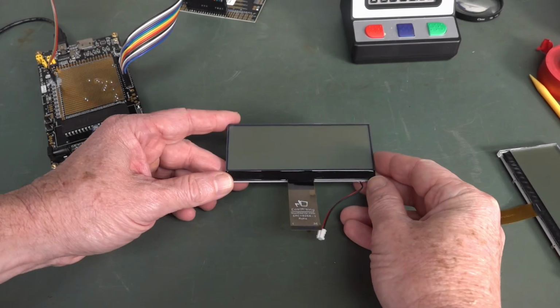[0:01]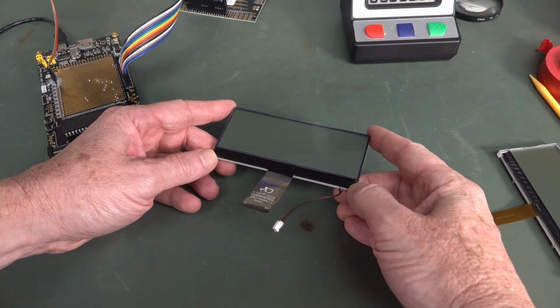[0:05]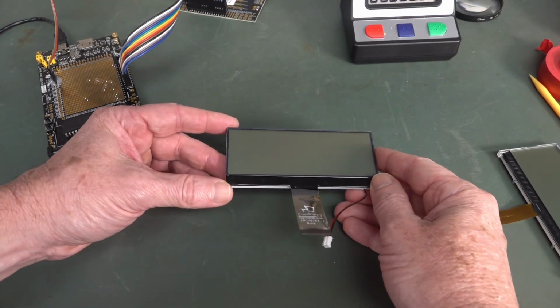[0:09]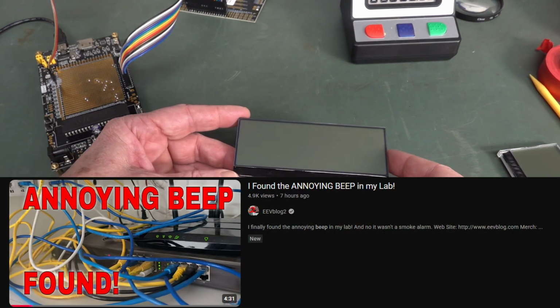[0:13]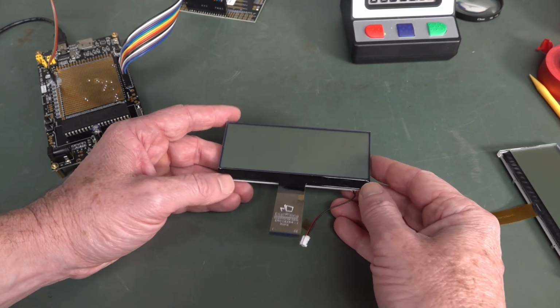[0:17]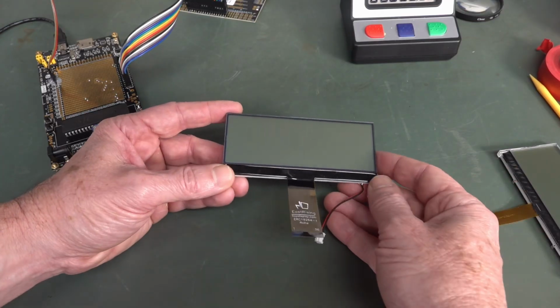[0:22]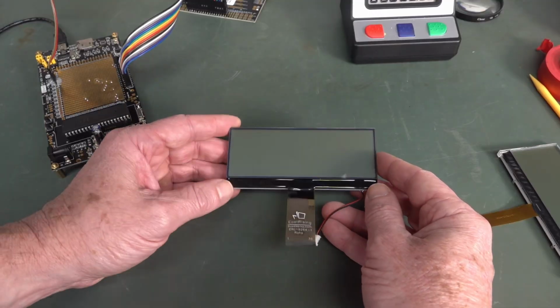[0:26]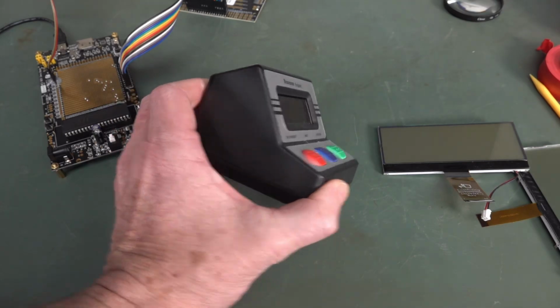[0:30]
This is part one in hopefully a project series where I develop a new product I'm going to call, there's that bloody beep again, I still can't find it. I'm going to call, it annoys everyone. Anyway, this is a project I'm going to call the µTimer, as in the micro symbol, the µTimer, and I'm going to develop a lab benchtop timer, similar to this Brannon one here.
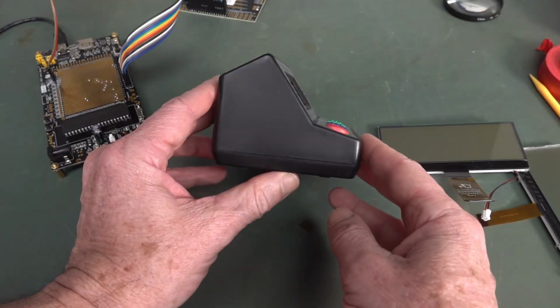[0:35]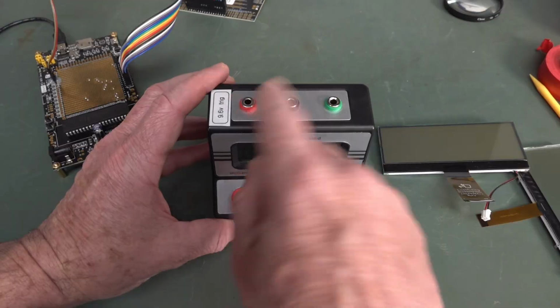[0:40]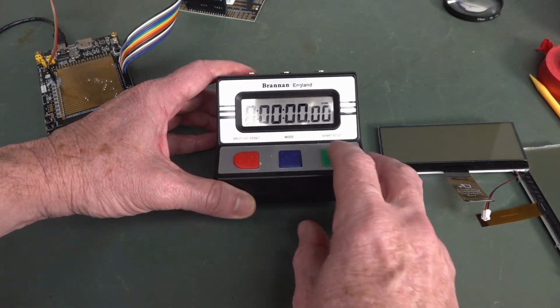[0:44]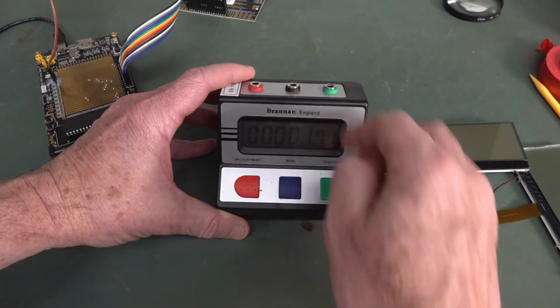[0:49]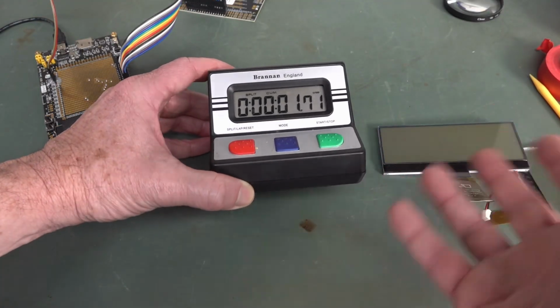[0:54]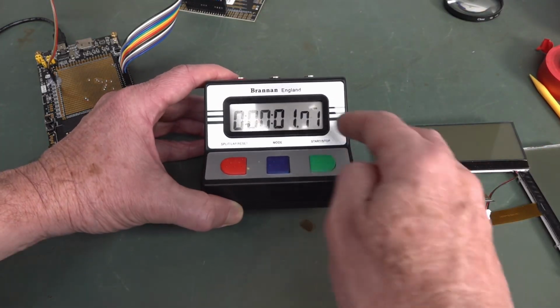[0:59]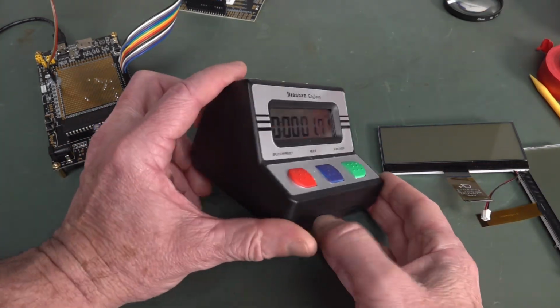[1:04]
There's quite a few on the market that have a similar sort of desktop form factor, and I've always wanted one of these. This one's okay, you've seen me use it. It's got some external inputs here, but they're not very versatile. But anyway, it's just a basic timer. It's just got start, stop, and you can override with external inputs here, useful for timing projects and timing processes, where you might want to automatically start and stop, trigger it, so you don't have to be there to actually watch it. But this is very limited functionality.
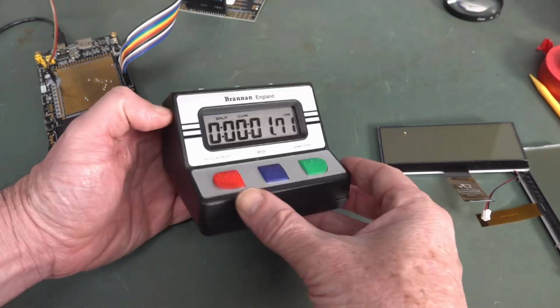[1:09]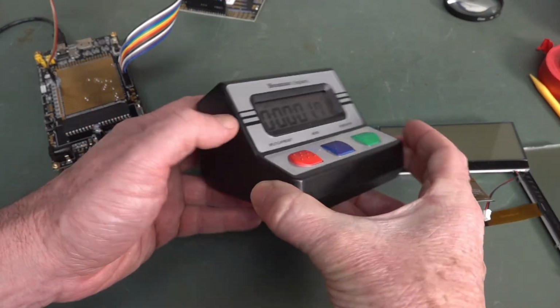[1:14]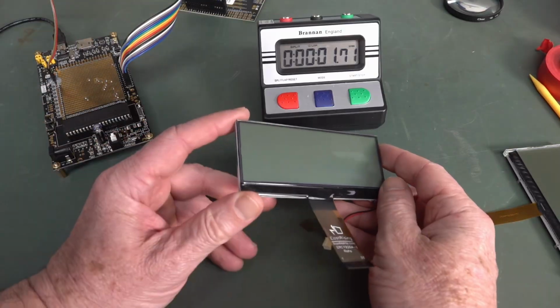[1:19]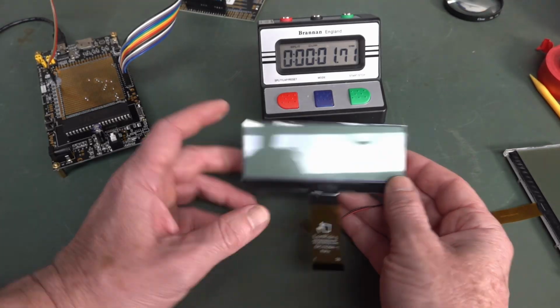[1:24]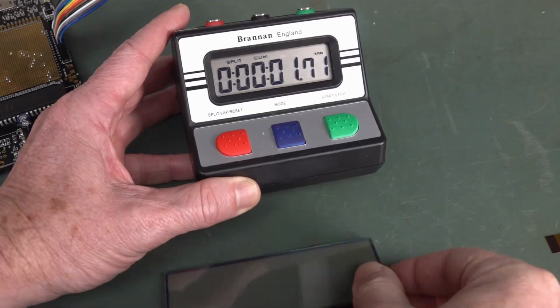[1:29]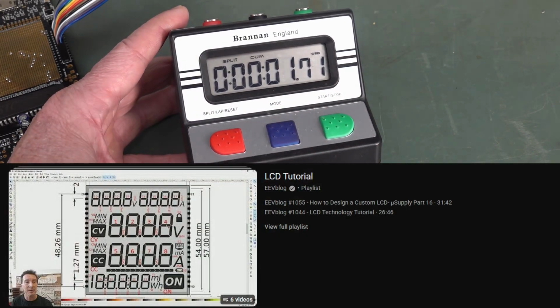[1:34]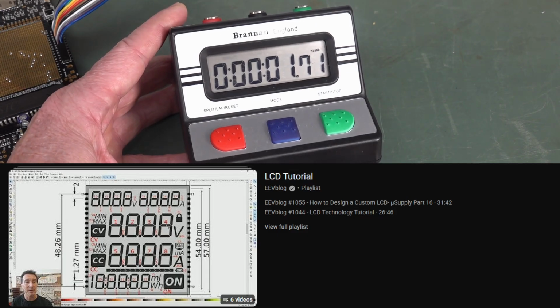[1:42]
But these sort of benchtop form factors are very common in the educational space, the science lab space, that kind of thing. So I was going to develop something similar. The design is basically all centered around the choice of the LCD, because the form factor can come later. It really needs a good LCD. Originally I thought I'd get a custom made 7-segment display, and I'll link a video here if you haven't seen it, where I develop a custom LCD and show you how relatively easy and inexpensive that is, depending on where you go.
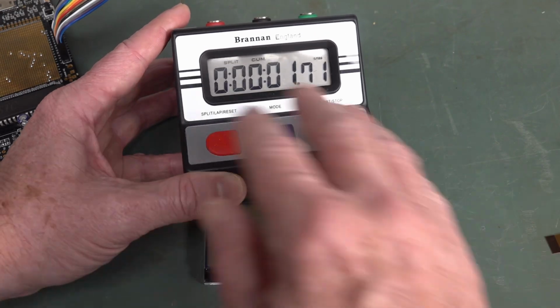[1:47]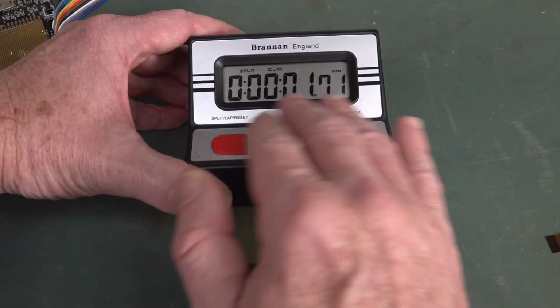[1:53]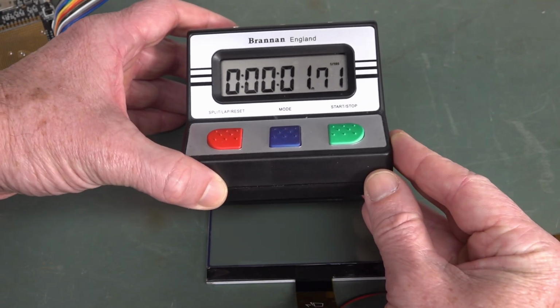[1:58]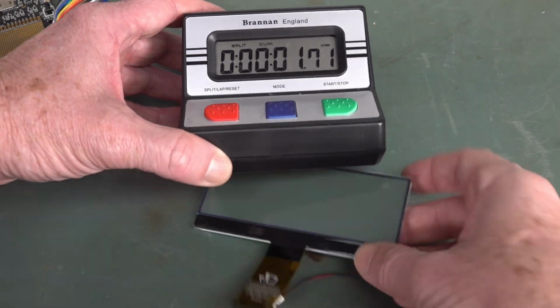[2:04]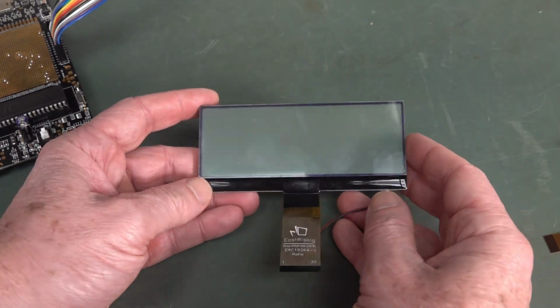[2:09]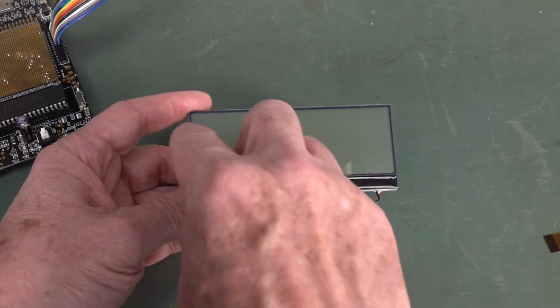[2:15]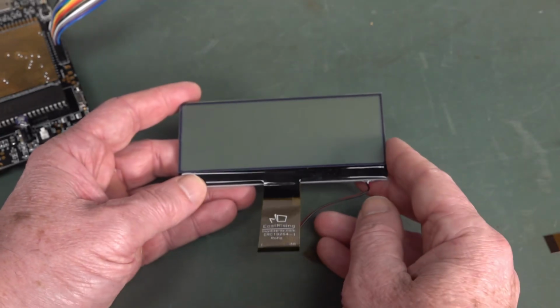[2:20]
So a custom LCD, and I wanted bigger digits so that you can see it from across the lab. Custom 7-segment displays like this can have really good contrast. That's the best in terms of contrast, but it just limits the functionality. And I thought, well, I don't want this to be a jack of all trades, master of none. So not only would I have a bigger display, but I'd make it full dot matrix as well, just for some versatility. You can change the size of the font, you can have multiple timers going and things like that. You can't really get that flexibility with a custom 7-segment LCD.
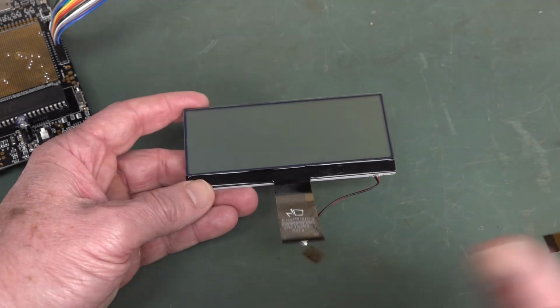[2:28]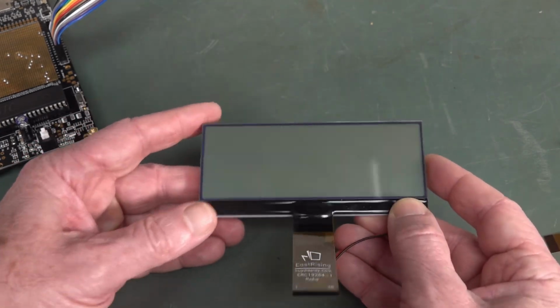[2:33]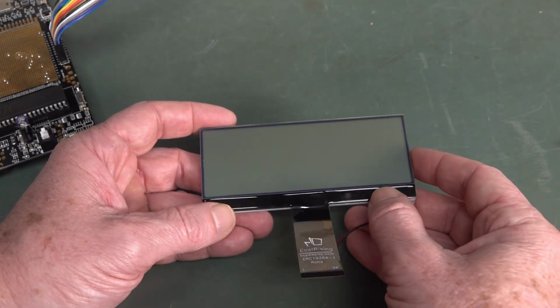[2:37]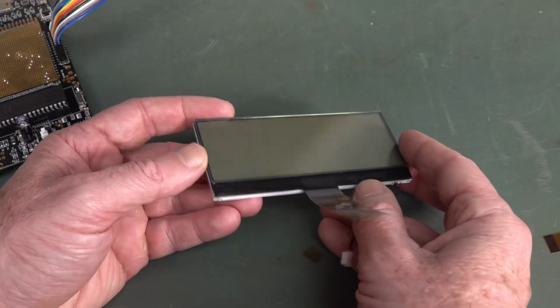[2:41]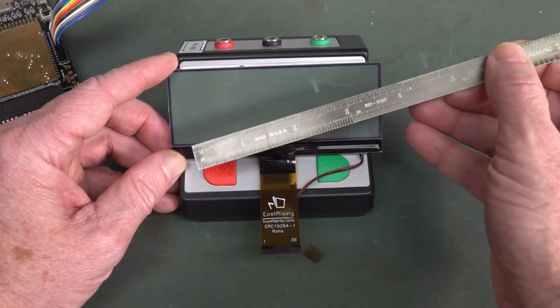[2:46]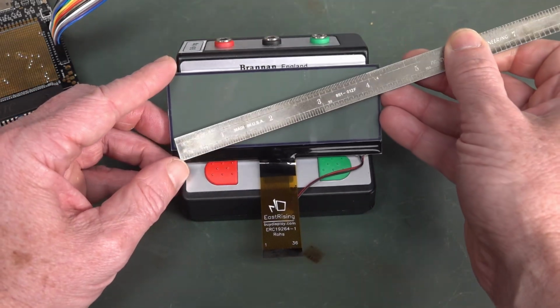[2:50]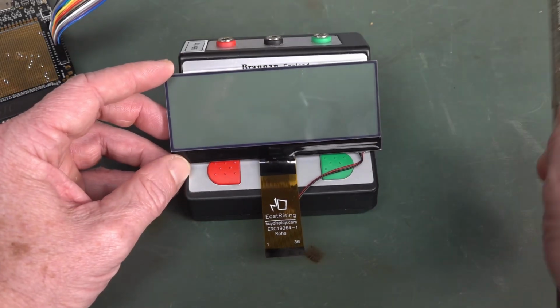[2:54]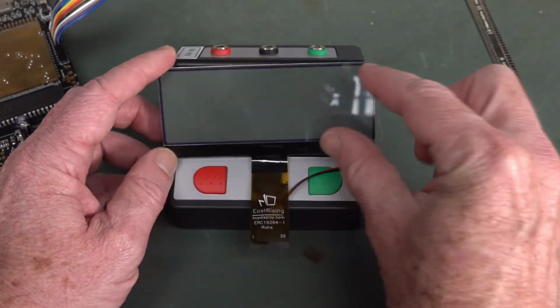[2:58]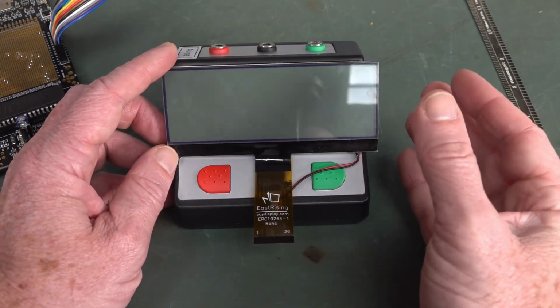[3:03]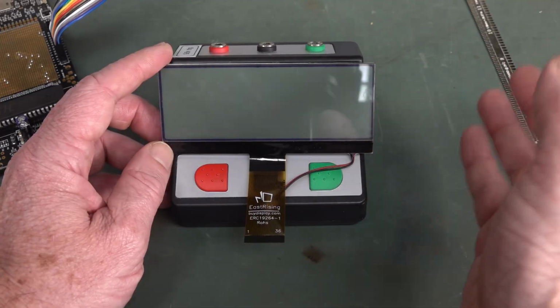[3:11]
You're just fixed. So I thought I'd get a low power display, because it's got to be battery powered from a couple of AA batteries. I haven't decided on the power source yet, but we need sub 1 milliamp consumption. Looking around at LCDs, I figured a 4-inch diagonal one like this, I think 4.1 inches visible area, would give nice big digits you could see across the lab. Of course it's got to have good contrast as well. It's got to be low power, so it's battery powered, so that you could have a clock on this thing during the day when you're not using it as a lab timer.
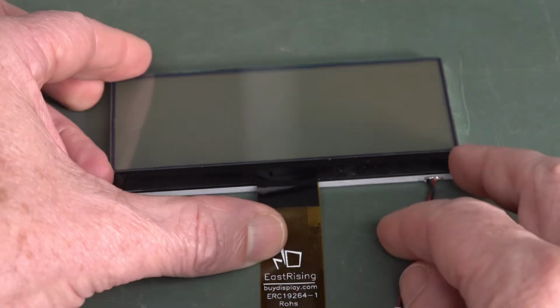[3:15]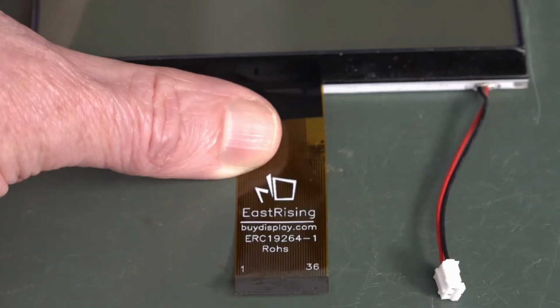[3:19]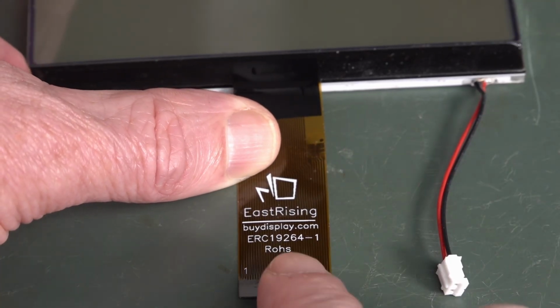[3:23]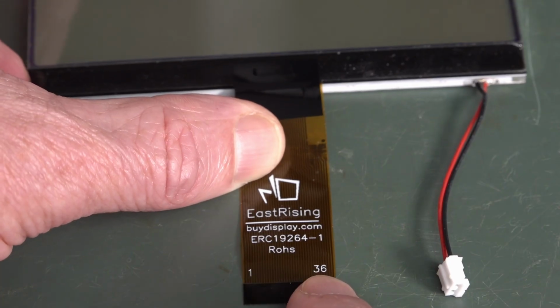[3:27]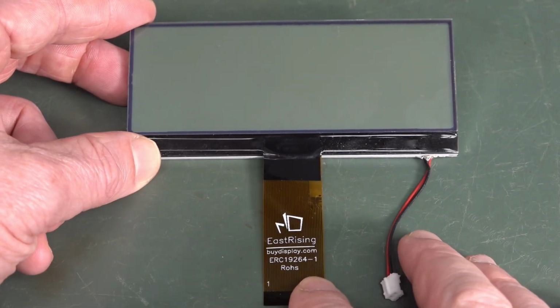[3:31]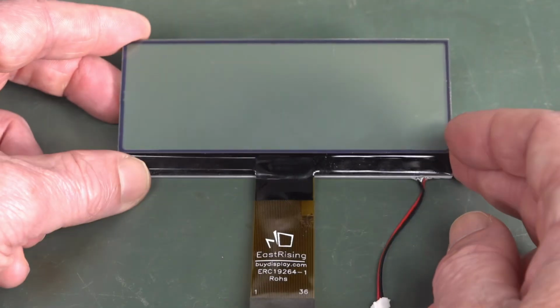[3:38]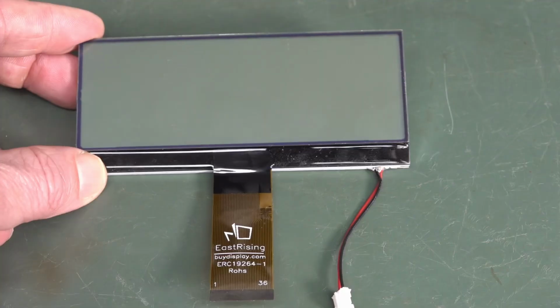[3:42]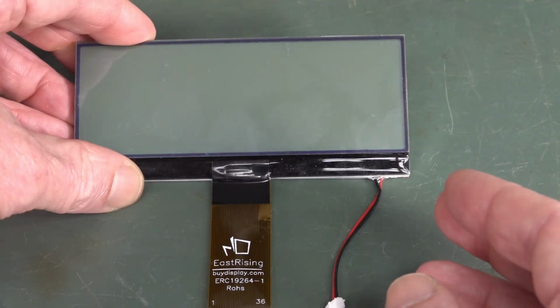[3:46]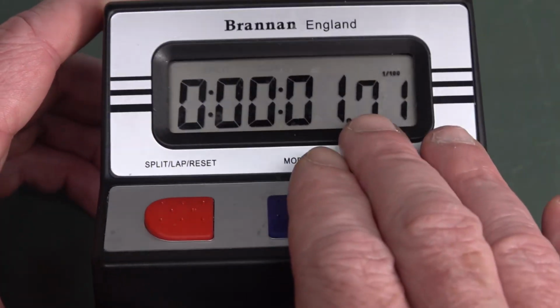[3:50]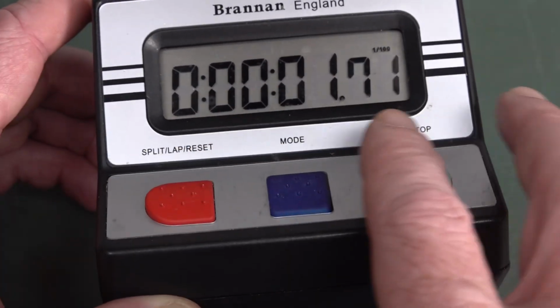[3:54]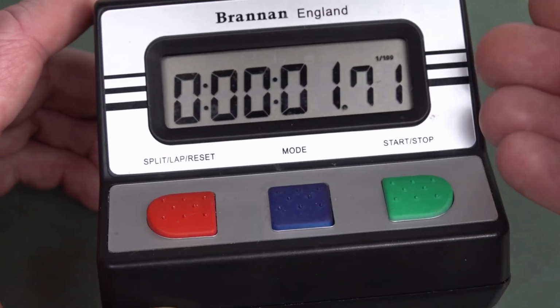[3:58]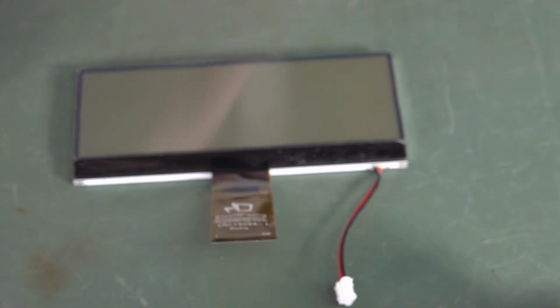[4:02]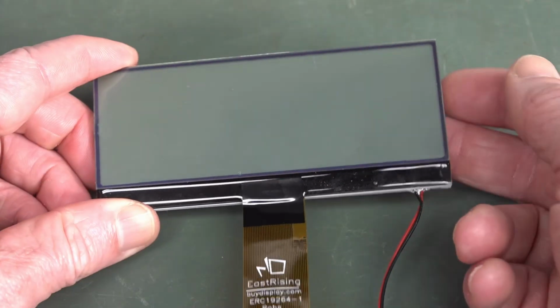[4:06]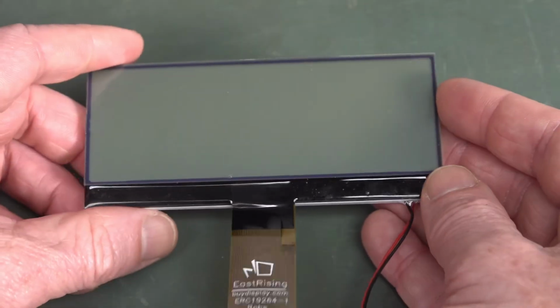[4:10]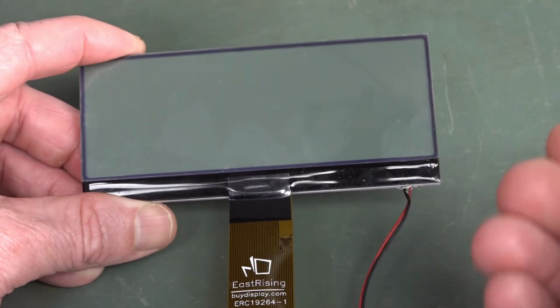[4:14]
So I was looking around at 4-inch LCDs and I found this East Rising one. They've even put their website on there, buydisplay.com. So I got this sample. This is an ERC19264-1, and this is about $9 one off, and the price drops in volume, of course. It does include a backlight, but this is what's called a transflective display, and I think I've done a tutorial video on LCDs and the different types. Transflective combines the best of a reflective display. This is a 100% reflective LCD, you don't need a backlight, it doesn't have the ability to have a backlight, it's 100% reflective backing on it. That's called a reflective LCD, and this one is also reflective, but it's transflective in that it will also allow a backlight through, and this one does come with a nice white backlight on it, where it allows the light to come through.
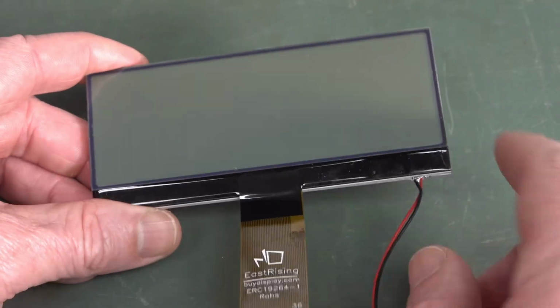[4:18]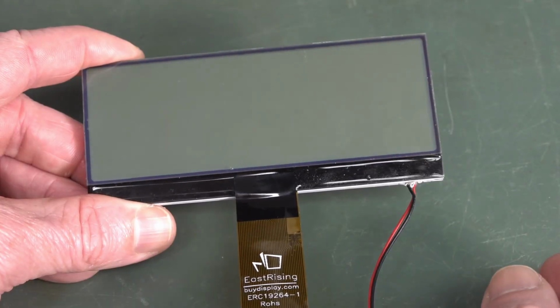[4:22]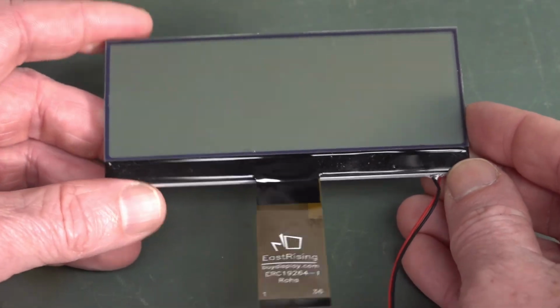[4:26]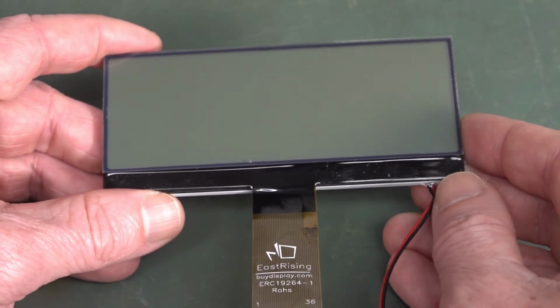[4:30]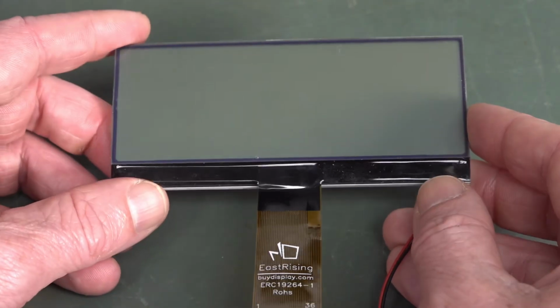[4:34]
But I don't really need the backlight, but I guess I could put a backlight button on it, so if you want to temporarily turn the backlight on, you can, but otherwise it's going to chew too much battery power. So ideally I wanted a fully reflective LCD display, but I couldn't readily find one in 4 inches. So anyway, I got this one and I thought we'd try it out.
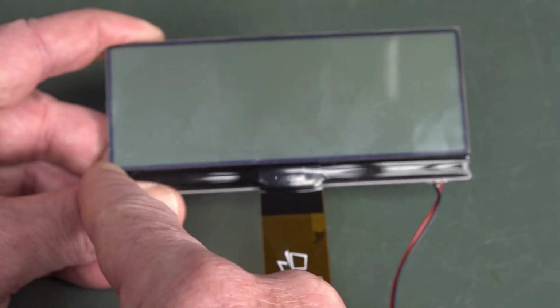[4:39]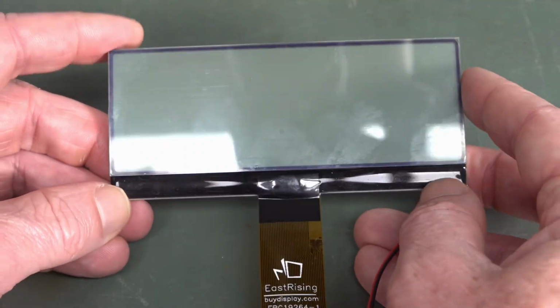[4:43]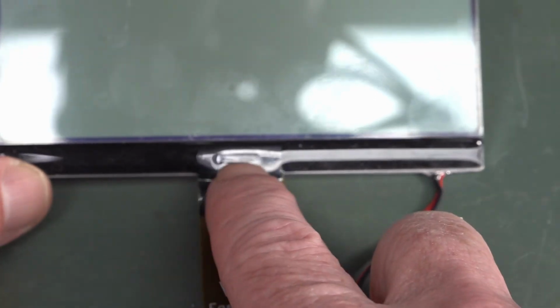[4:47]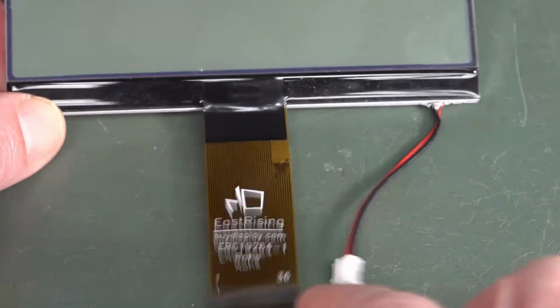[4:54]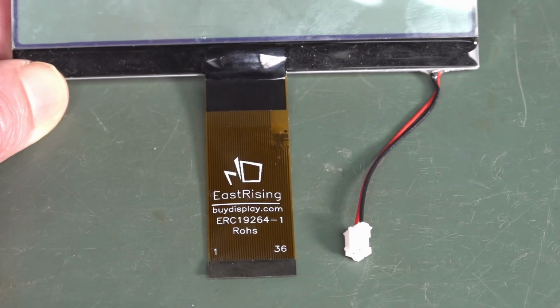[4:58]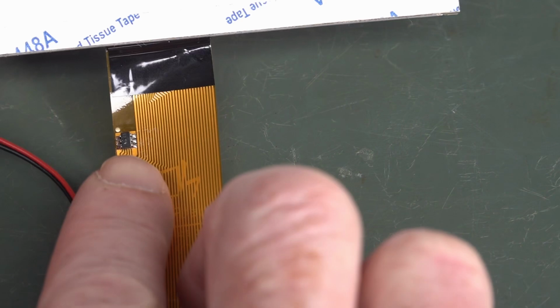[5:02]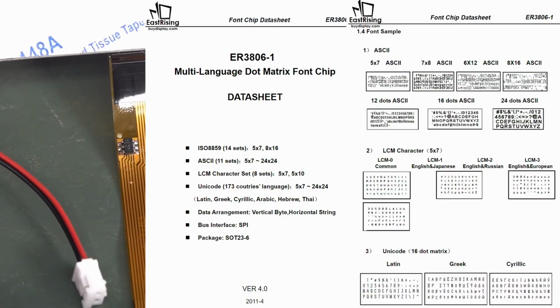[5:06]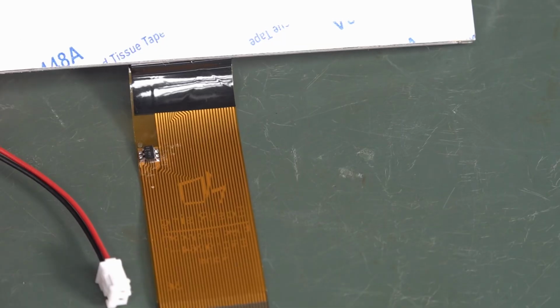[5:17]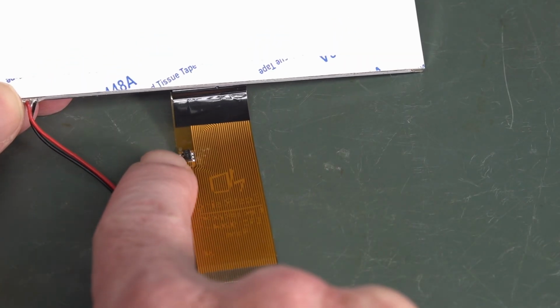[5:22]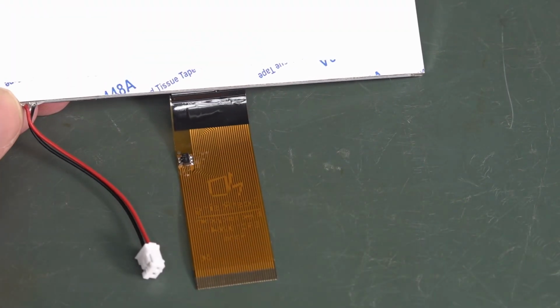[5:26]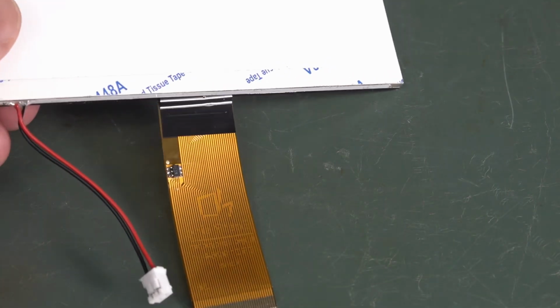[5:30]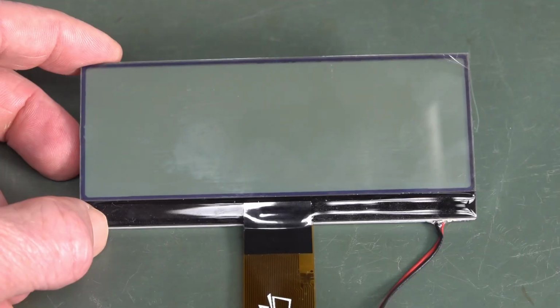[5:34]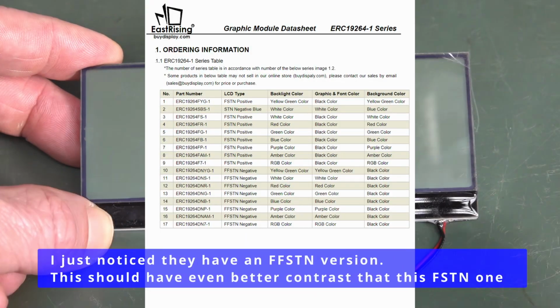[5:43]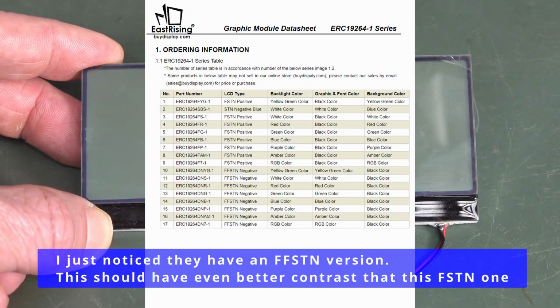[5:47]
And this one actually comes with an optional font chip, which stores all the fonts so that you don't have to compile the fonts you're going to use for all your text inside your microcontroller. That just means you can use a smaller, simpler, cheaper microcontroller, and simply read the fonts from here and transfer them directly into the chip as you need them. So it just frees up memory space in the microcontroller that would otherwise be taken up with fonts. So that's handy. If you do know of a 4-inch fully reflective LCD instead of the transflective one like this, this is an FSTN one, and I'll link all the data sheets for all these things down below.
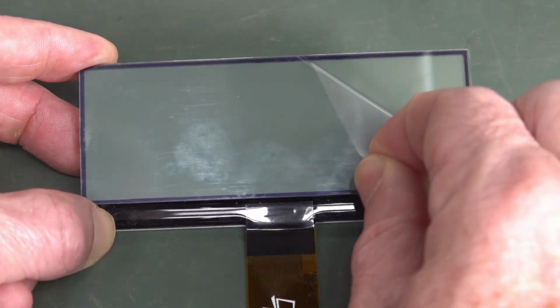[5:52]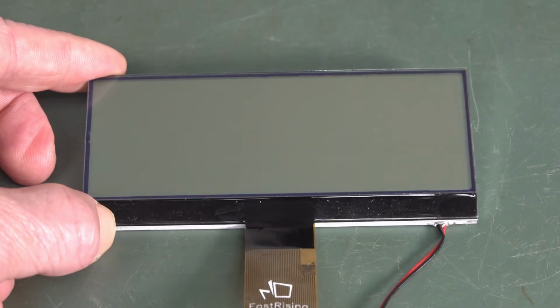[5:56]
So anyway, for you film aficionados, we have the film on it. Oh, look at that. There we go. Oh, thing of beauty, joy forever.
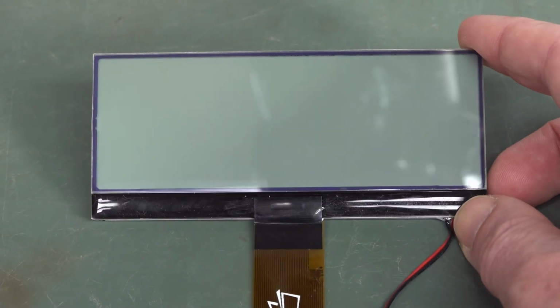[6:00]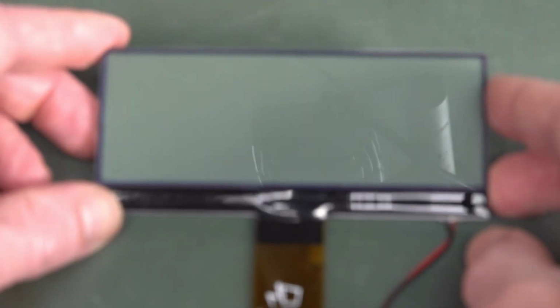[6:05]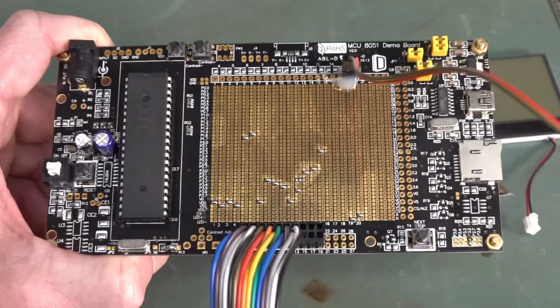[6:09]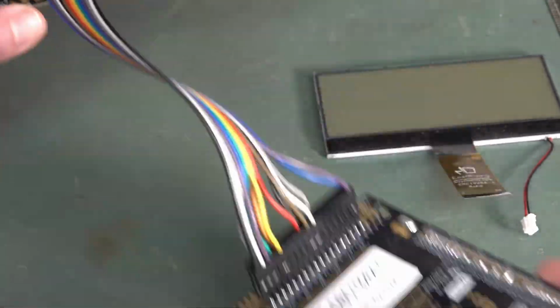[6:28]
So basically, this video is just testing out what I think about the contrast of this LCD and how it looks. I wanted to get this up and running very quickly, so I ordered the demo board as well. This is actually quite cheap. It's an 8051 demo board specifically for this LCD. Well, they will match it to the LCD you buy. They've got tons of different LCDs and they will match it. So this is the driver board for it, and it's got example programs built in, so we should be able to get this thing talking straight away.
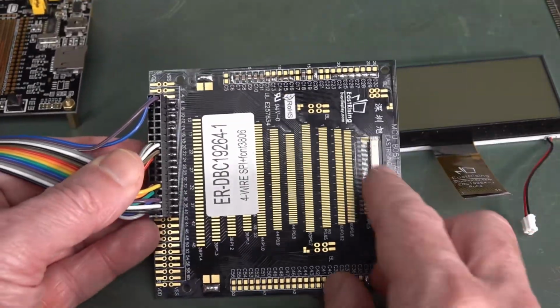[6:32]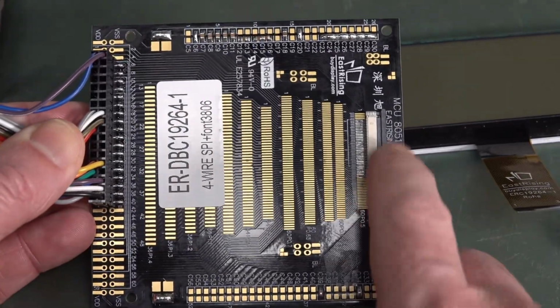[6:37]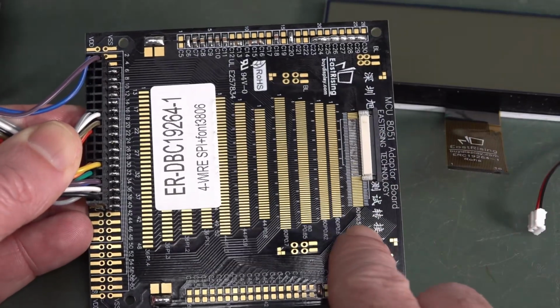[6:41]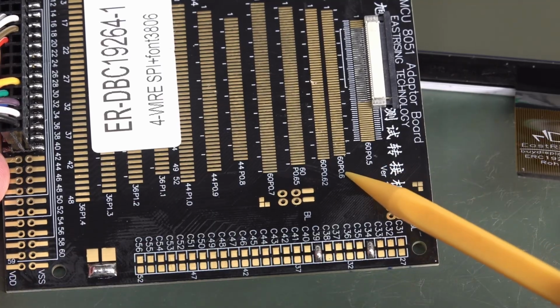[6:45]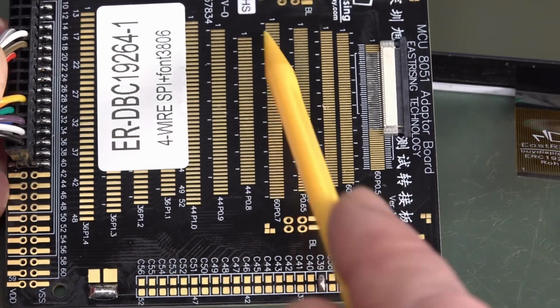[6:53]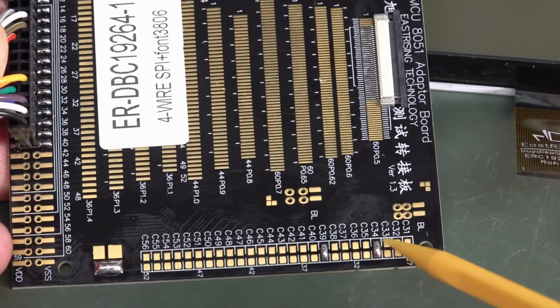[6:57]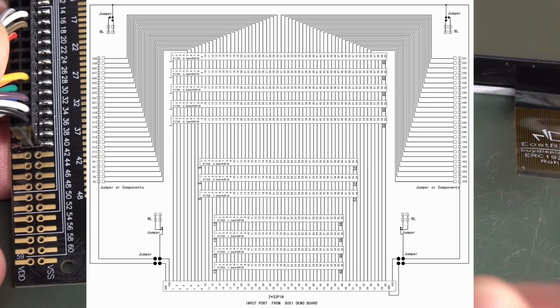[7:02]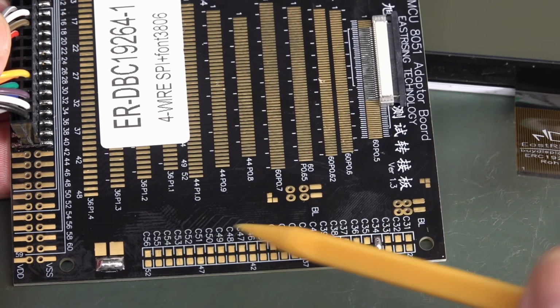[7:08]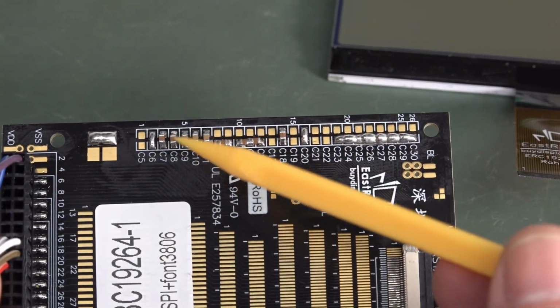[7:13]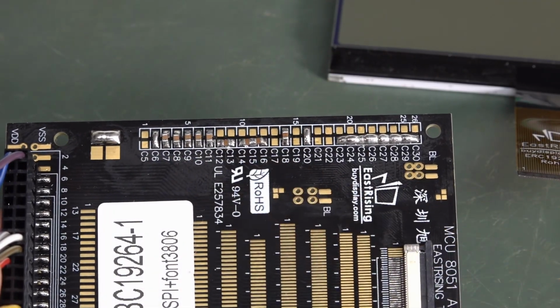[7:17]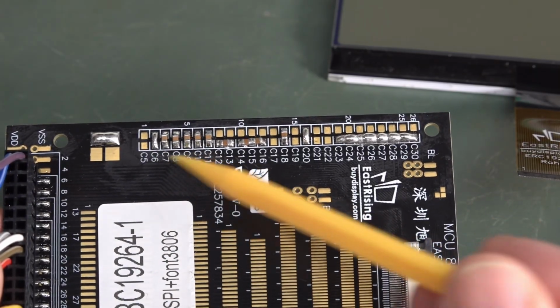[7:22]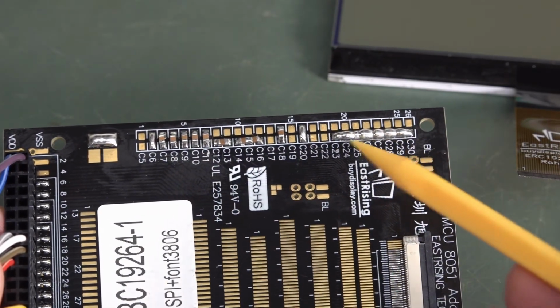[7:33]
I think this is the positive side. They should label it a bit better, but you can tie each individual pin down to ground up here. They've installed some caps up here, so you can put capacitors down to ground. They would be for the internal contrast boost converters, for example, the bias capacitors, the bias pins on the LCD. So you have to put those in various configurations. They've got a capacitor across 2 pins there, or they've got others going down to ground like this, and they've strapped these pins here.
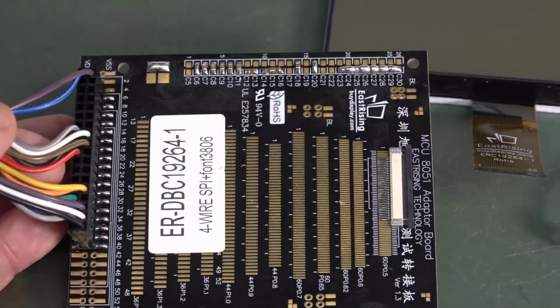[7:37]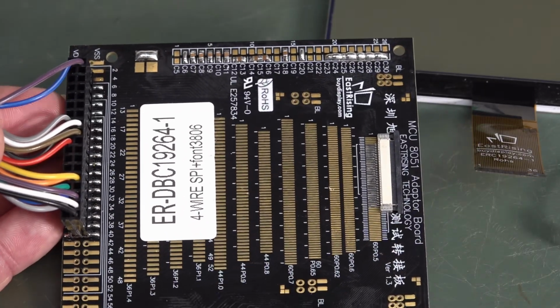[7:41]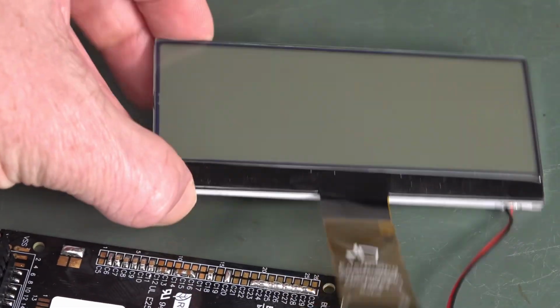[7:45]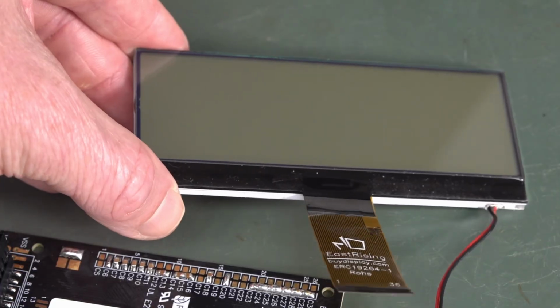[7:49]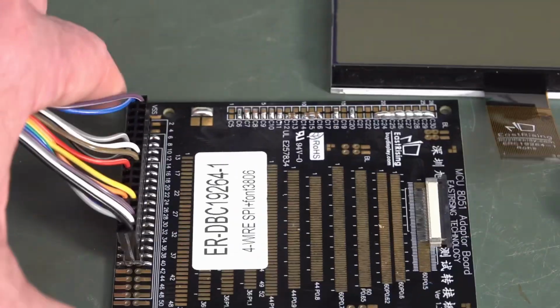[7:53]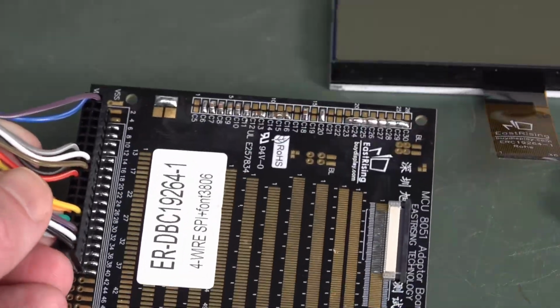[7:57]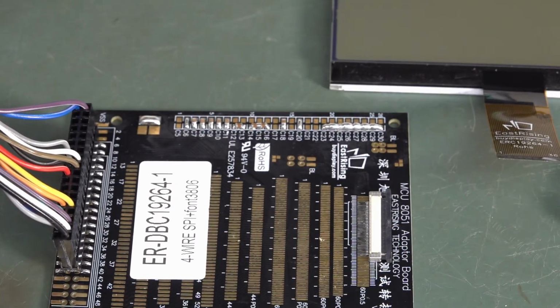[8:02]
I haven't gone through the exact pinout of this thing. They're only using some of the pins here. I think I specified an SPI interface because this LCD is capable of SPI serial interface. I think it might do I2C as well as 4-bit and 8-bit parallel interfaces. So it's very flexible, but I think it might be working serial, but I haven't 100% confirmed that. Anyway, let's plug it in and see if we can get this thing working straight out of the box.
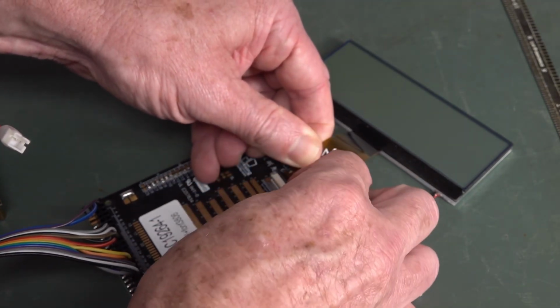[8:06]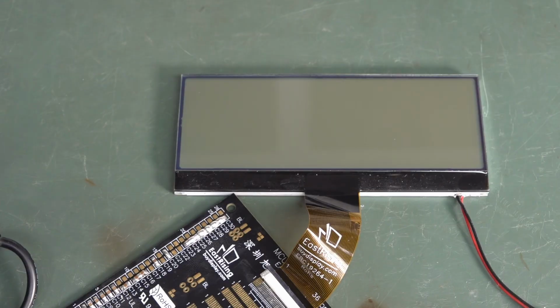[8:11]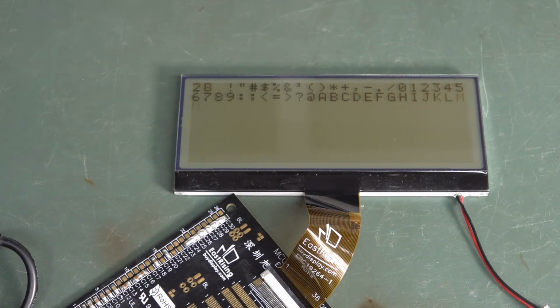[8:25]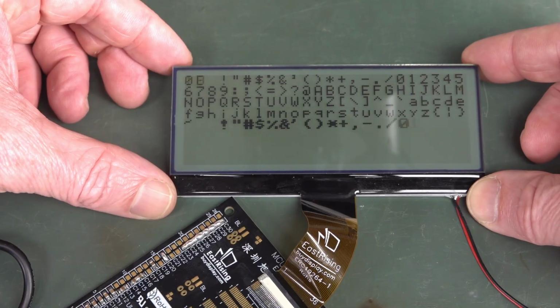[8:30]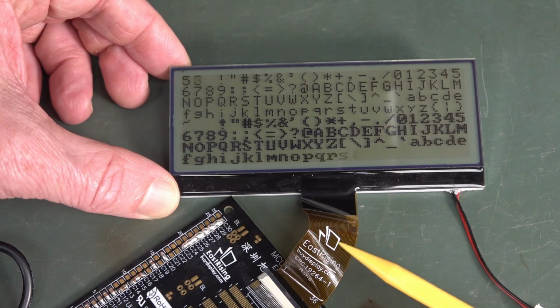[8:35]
All right, so we put that in there. We get that shut like that, and let's power this thing up. All right, I've plugged in the USB here, haven't plugged in the backlight yet. Let's just see, because I really care about what it can do without the backlight. So let's power on. Hey, there we go. EastRising buydisplay.com, and boom, straight off the bat, it is giving us all our outputs. Look, and it's changing the fonts as well. I don't know if it's reading from that actual font chip on there or whether it's just got them programmed in.
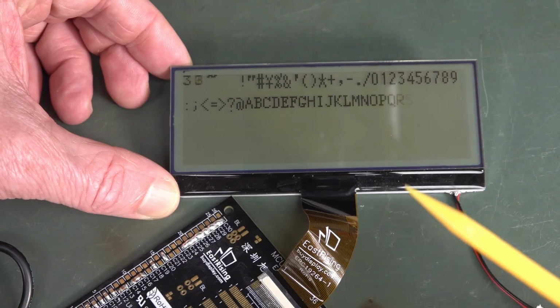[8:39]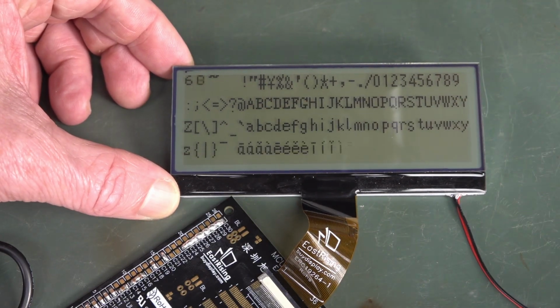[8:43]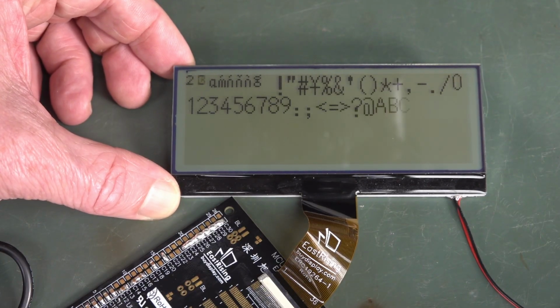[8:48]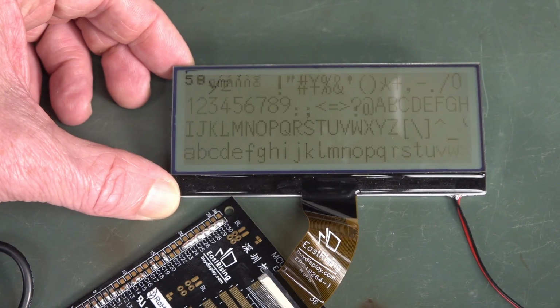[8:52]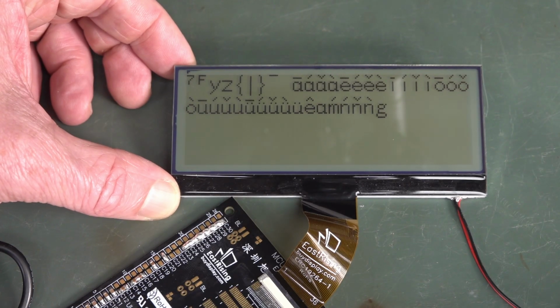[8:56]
But of course, when we're having big digits, I might have to do custom fonts. So not sure if I'd use the font chip anyway, but might as well include it in the design, I guess. Look, that's quite a large font, but that's still not as big as we want. But yeah, there you go.
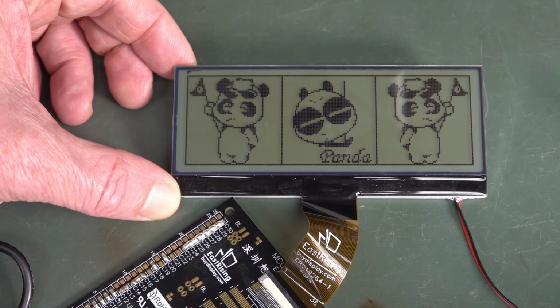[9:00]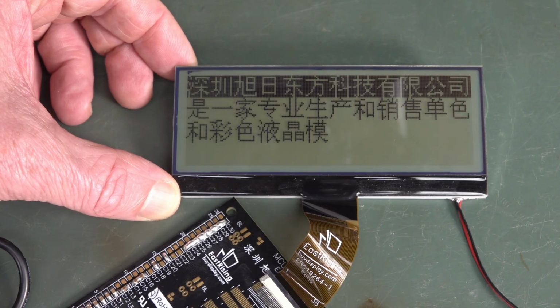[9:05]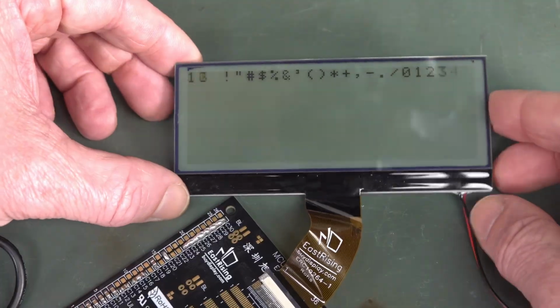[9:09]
So cool bananas. Right out of the box, they've sent me this demo board, and there you go. The Dash series, they've got their Panda. And it's got a stop button on it too, so yes, we can freeze that. So there you go. It works out of the box. It's not a bad viewing angle.
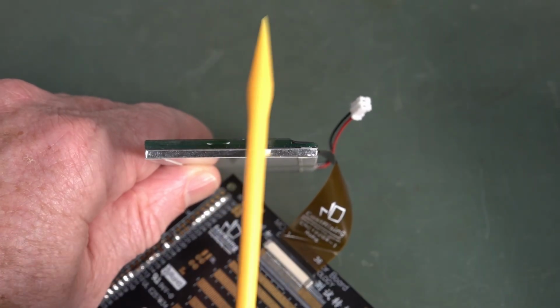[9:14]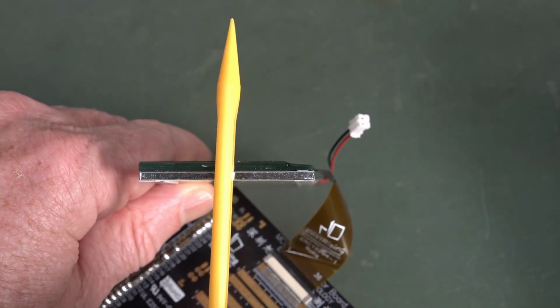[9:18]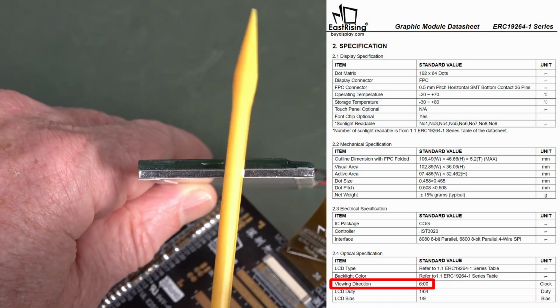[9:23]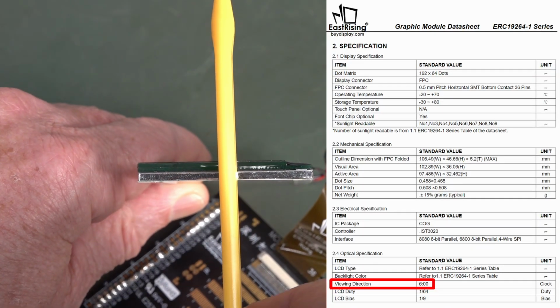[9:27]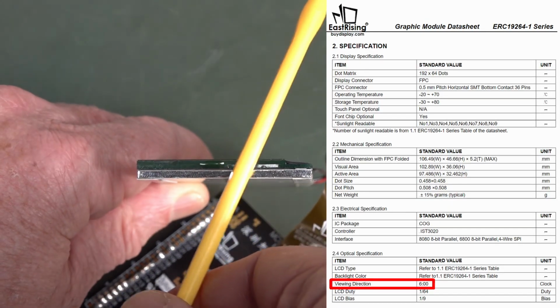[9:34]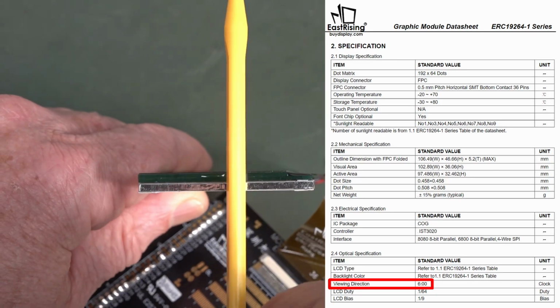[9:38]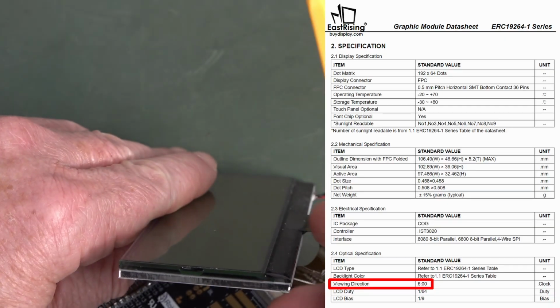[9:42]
So when you order LCDs, either custom or off the shelf like this one, they will have what's called a bias angle or a view position or something like that. The terminology can interchange, but we'll just stick with bias angle. What that means is that you can get them in 2 types, either 6 o'clock or 12 o'clock. It refers to either up or down on a clock, basically. And this one's a 6 o'clock one if you look at the data sheet. What that means is that this is the bottom of the LCD.
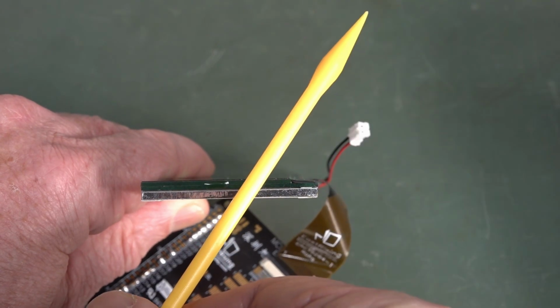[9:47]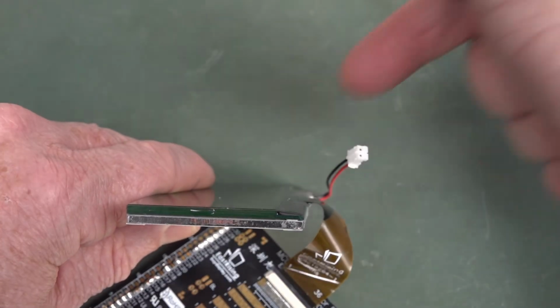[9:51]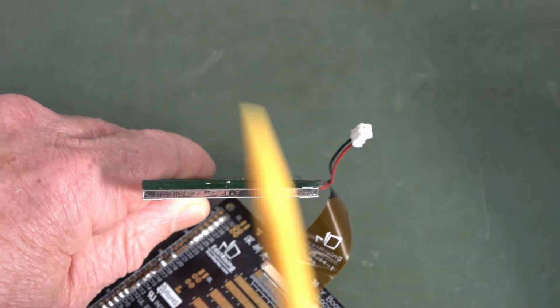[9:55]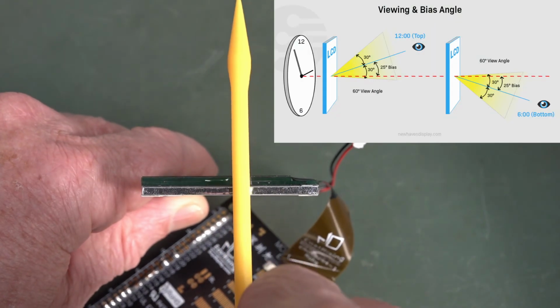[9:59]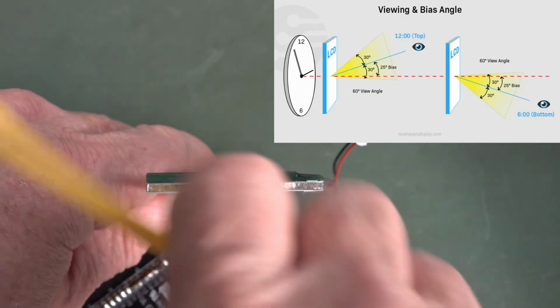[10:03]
So it's designed to be viewed from a lower angle like that. So if your eyes are over here, you're looking up at the screen. That's called a 6 o'clock bias or viewing angle. And if you get a 12 o'clock one, it's actually over here like this, so you're looking down on the LCD.
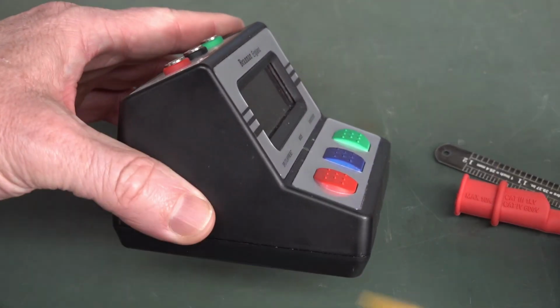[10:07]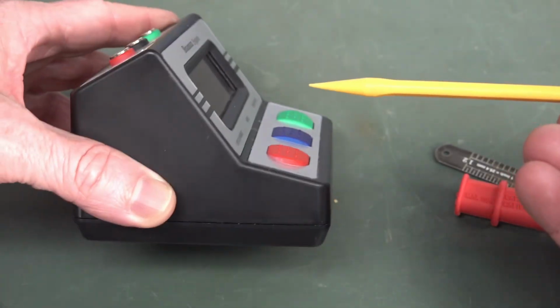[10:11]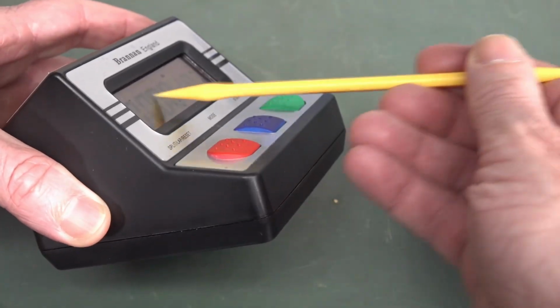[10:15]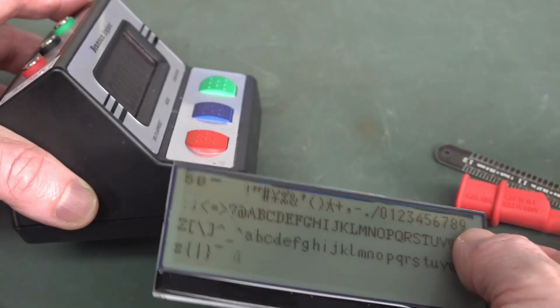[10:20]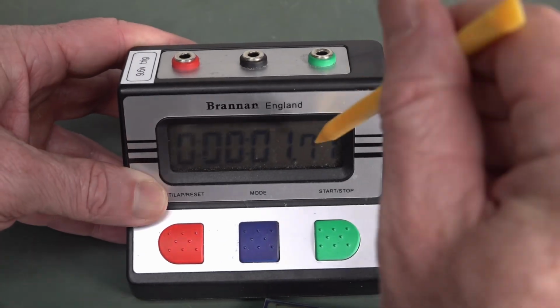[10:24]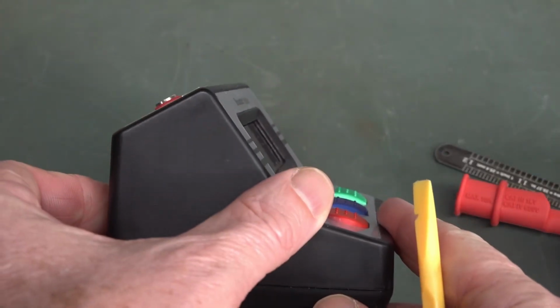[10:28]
So if you've got a product like this, if you're viewing it from a long way across the lab and you've got it sitting on a bench, you'd be looking up at the LCD. So you want this 6 o'clock one that we've got here. But if you had something that was flat like this and you're looking down on it, then you would want the 12 o'clock bias angle.
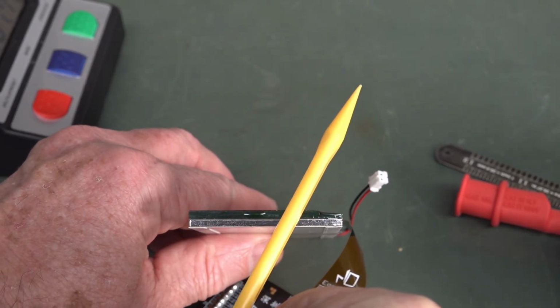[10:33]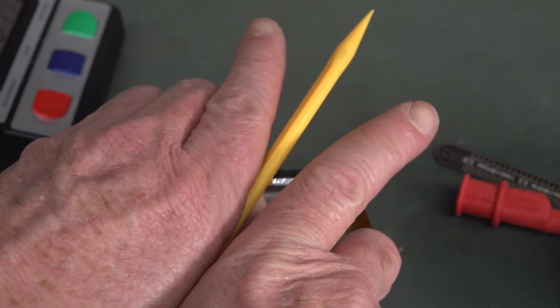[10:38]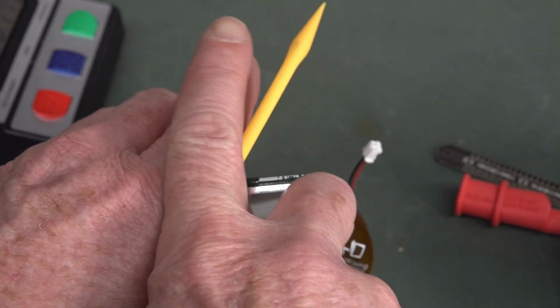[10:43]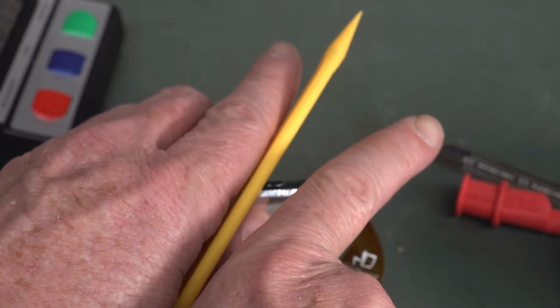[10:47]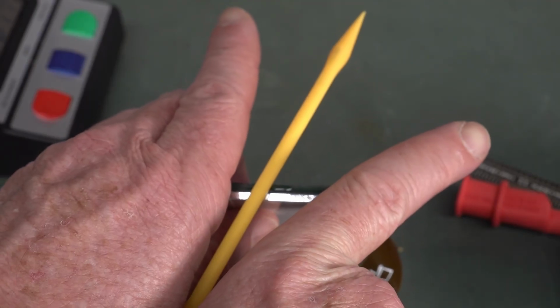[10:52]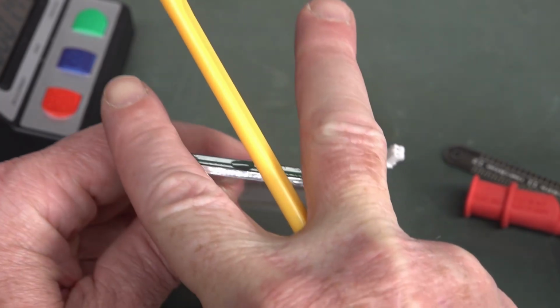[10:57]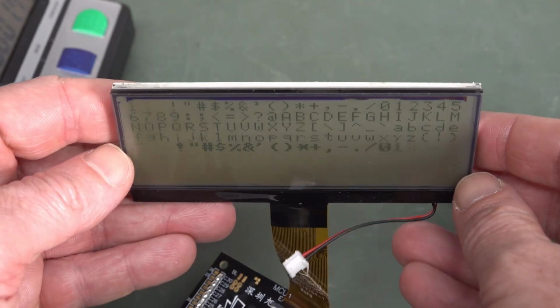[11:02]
And on top of the bias angle, which say it's at 6 o'clock from the bottom, you will then have the viewing angle. Please excuse the crudity of the model, I didn't have time to build a scale one or to paint it. You will have the viewing angle, which is then plus minus a certain number of degrees. Say you've got a 60-degree viewing angle, then it would be plus minus 30 degrees from that bias angle. So if it's 12 o'clock, then you'll have a viewing angle like that from the positive side. But this is the 6 o'clock one, and you can see this actually has quite a large viewing angle.
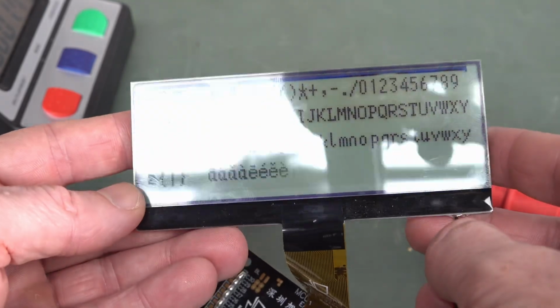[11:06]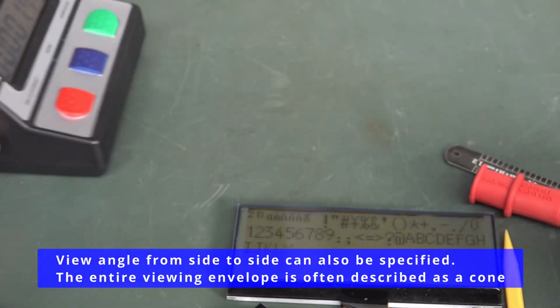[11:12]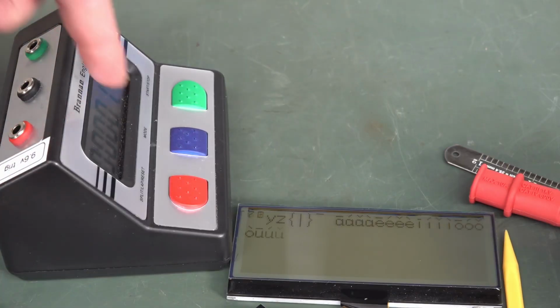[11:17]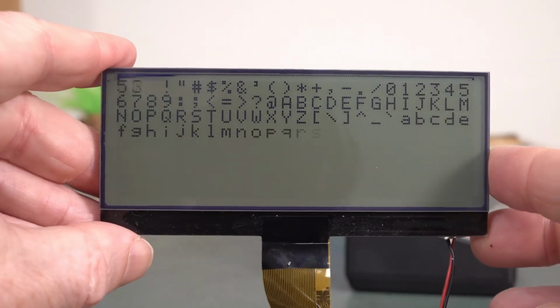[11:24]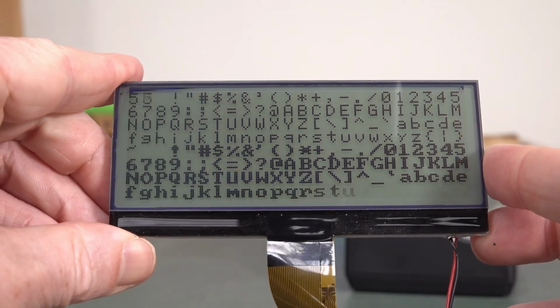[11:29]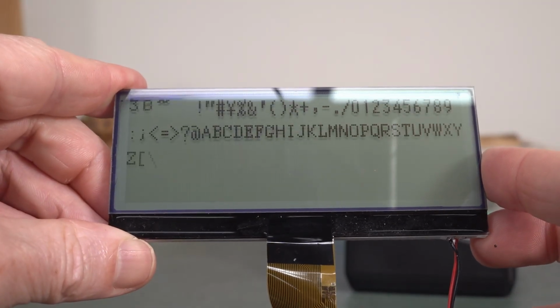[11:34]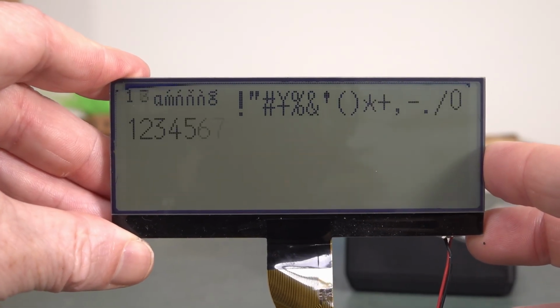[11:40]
It's hard to capture this on camera, but yeah, you probably want a 6 o'clock viewing angle for a product that's shaped like this. You certainly wouldn't want 12 o'clock looking down like that. That'd be wrong, especially when you've got the tilted angle already. It's hard to show LCDs through the camera, but that is direct. And if I tilt it like that at the lower 6 o'clock angle, you can see that's probably a better optimal contrast, but there's not much in it. It's pretty darn good. So I think this LCD is definitely a contender.
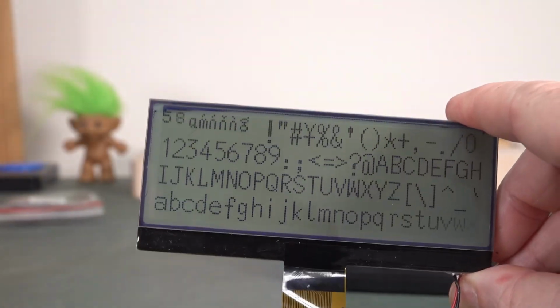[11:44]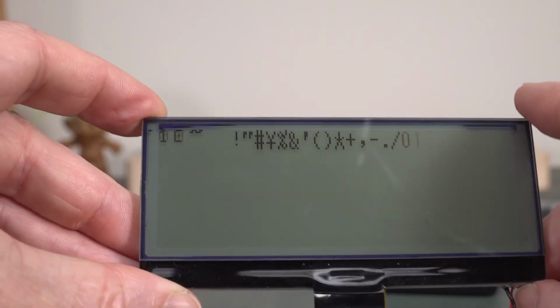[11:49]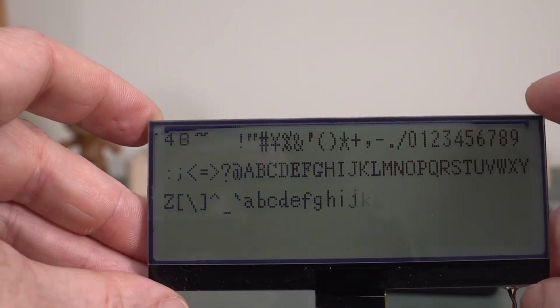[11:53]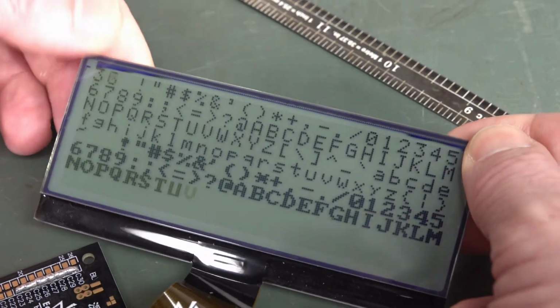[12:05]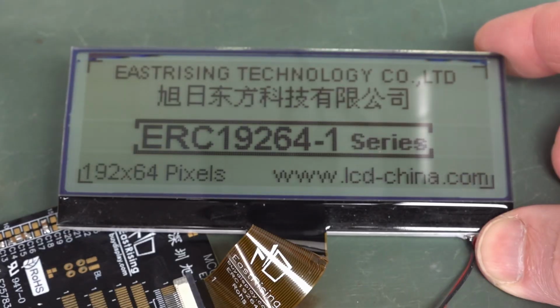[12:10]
I really like it. Oh, what's happened there? What's happened up the top there? Can you see that? Look, there's some bleeding or something. What's going on there? That wasn't there at the start, right? I'll have to review my footage. I'm sure that wasn't there at the start. What the heck? They're individual pixels. There's nothing physical there.
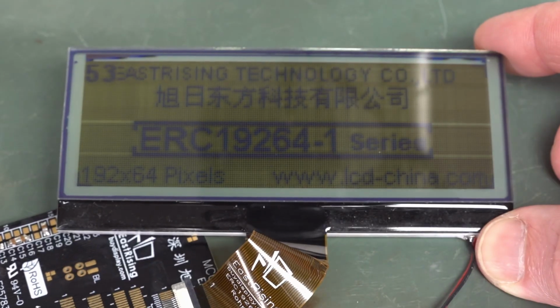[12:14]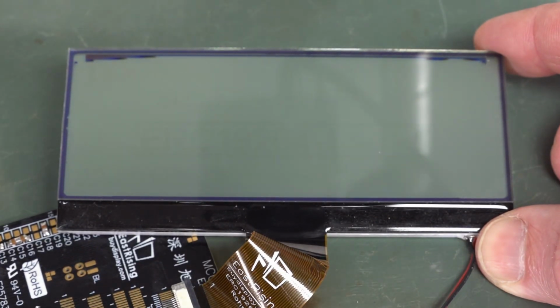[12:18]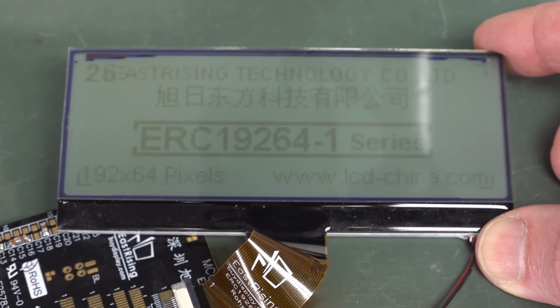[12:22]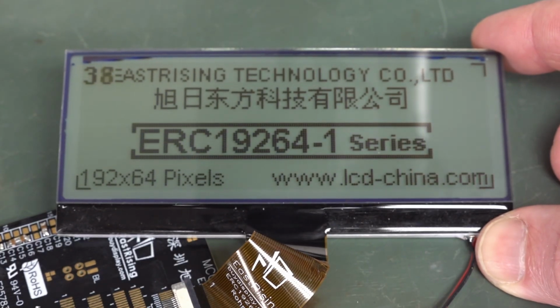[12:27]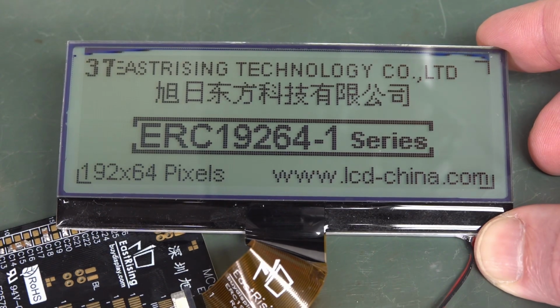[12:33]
Anyway, this also has some contrast buttons. Yeah, I can adjust the contrast. There you go. So I can take the contrast right down so there's nothing on the display and bring it up. There you go. So it was set pretty optimal. That is quite dark. I'm really quite happy with that. As I said, it won't be as good as a custom 7-segment display, a proper reflective one, but geez, that's not too shabby at all.
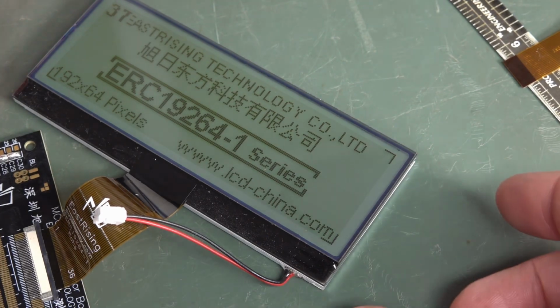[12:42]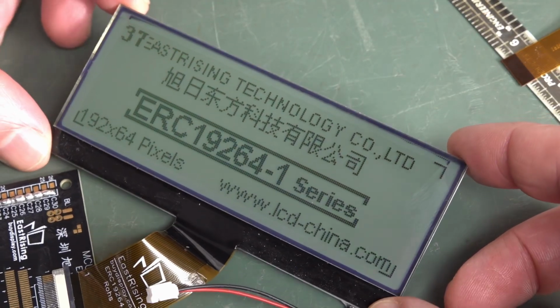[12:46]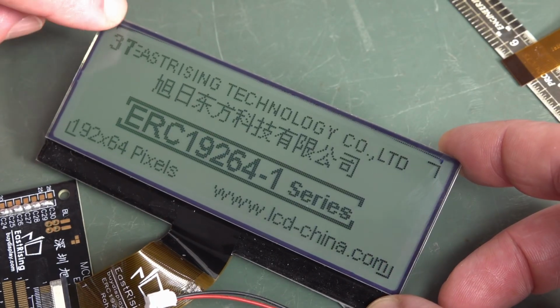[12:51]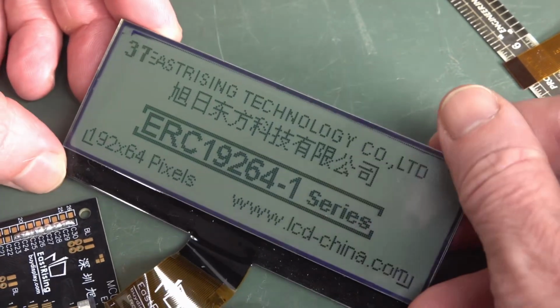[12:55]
Check it out. I just went to record the Amp Hour podcast, came back, and I noticed that it's all gone. It had completely gone, but it's actually now slowly starting to come back. Look at the pixels up there. And if I sort of, maybe, is it a static thing?
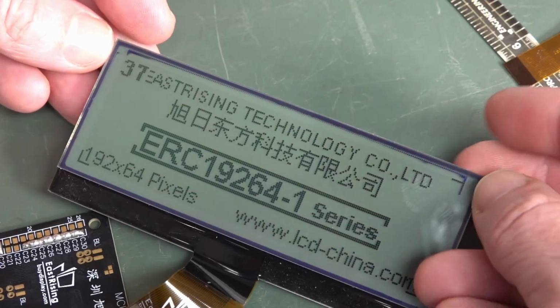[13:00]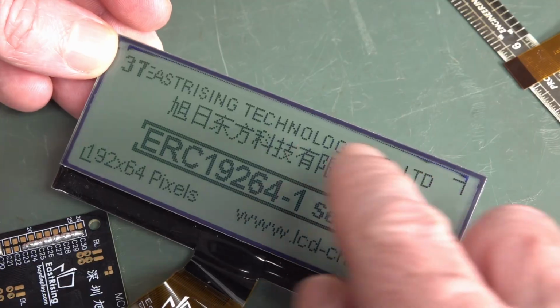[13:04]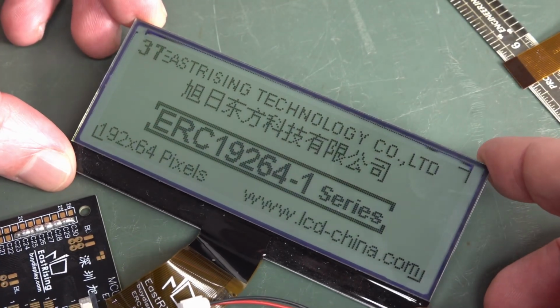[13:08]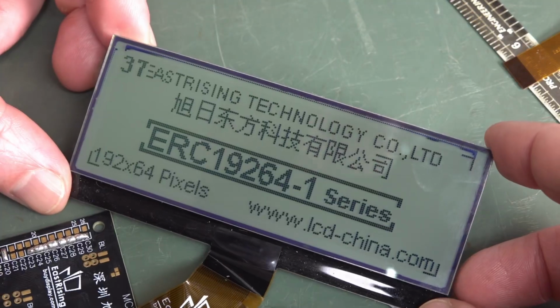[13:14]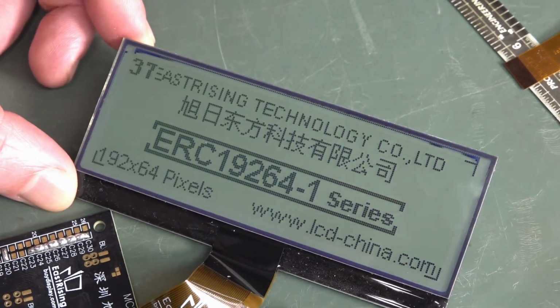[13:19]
If I rub my feet, something's going on. It was completely gone before, but you can see that now it's starting to come back. That could be some sort of static build-up on some unused pixels around the edge or something. Anyway, we'll leave that as a curious oddity for now. Might have to come back to that later.
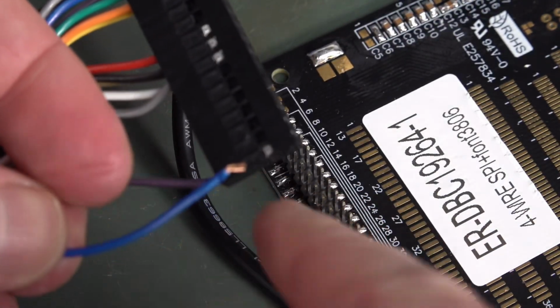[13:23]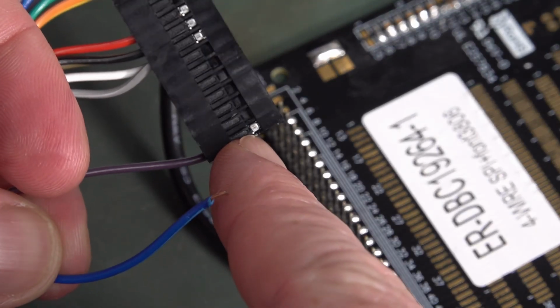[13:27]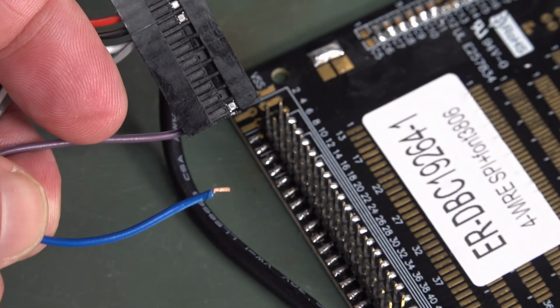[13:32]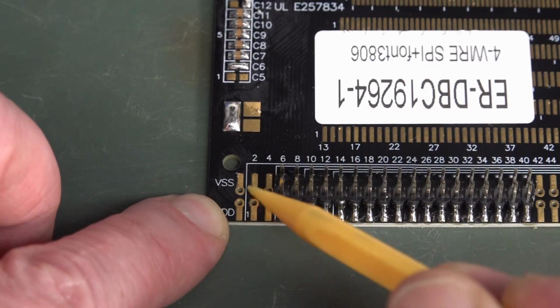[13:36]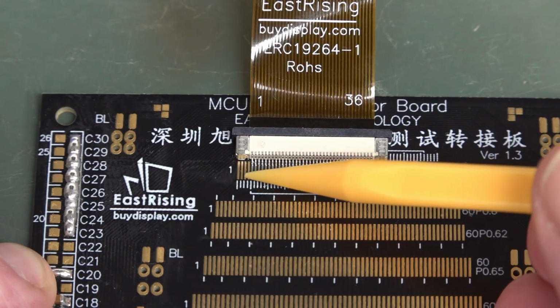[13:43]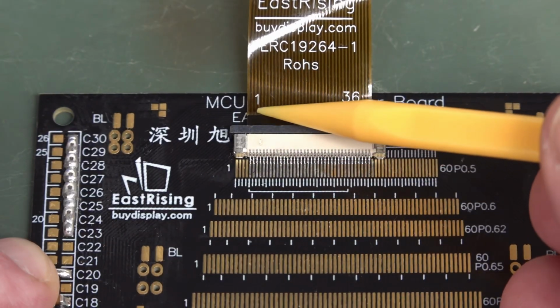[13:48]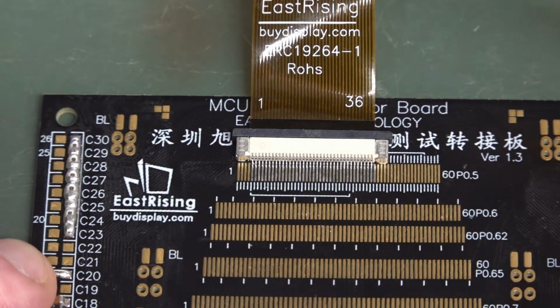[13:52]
And I thought I'd measure the battery current, but I've just come a gutser. I tried to pull the pin out here, which is the positive power pin, but the actual clip didn't come out and I pulled the wire out. Oops. One of the annoying things is that they've actually offset. They haven't put this right over to pin 1 over here. They've soldered it offset onto pin 5 and 6 over here, and they've done the same thing over to here, so pin 5 becomes pin 1 here. So when looking at the data sheet, I've now got to add 5 onto it.
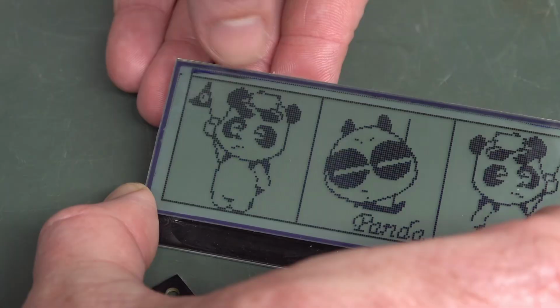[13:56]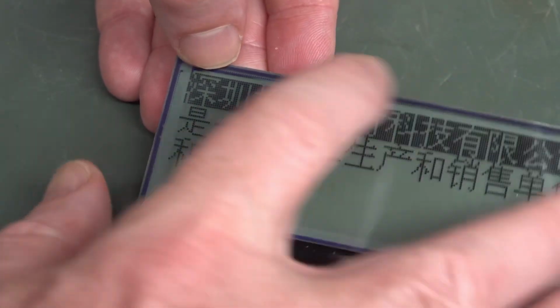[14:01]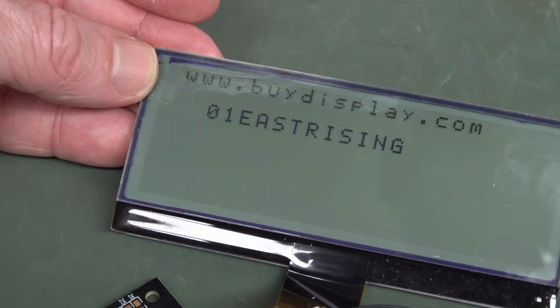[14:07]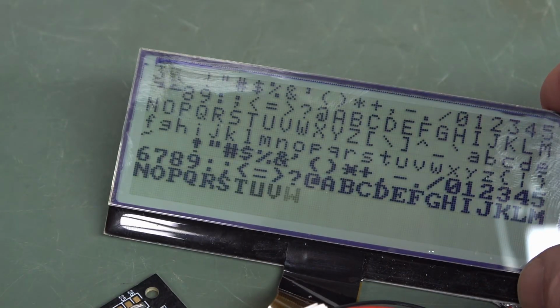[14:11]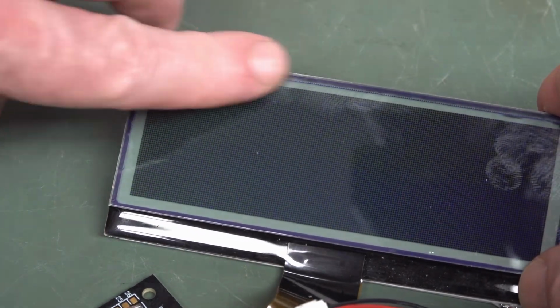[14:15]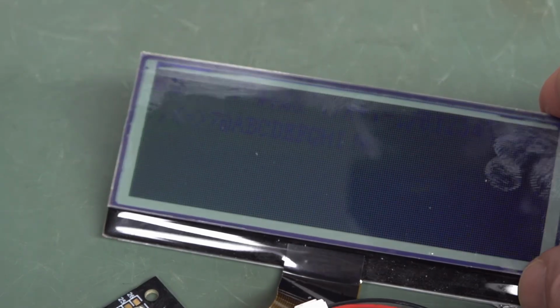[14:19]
Oh, yeah, that bleeding there at the top, that is just some excess liquid crystals outside of the main dot matrix display area. And yes, it is my static charges actually turning those on. So yeah, it's interesting though. And you can see they're outside of the area, because if I turn the contrast right up, yeah, you see those at the top there. So just some extra liquid crystals.
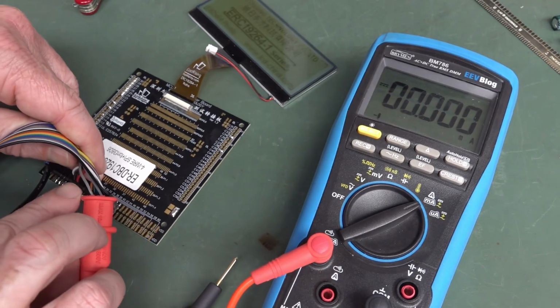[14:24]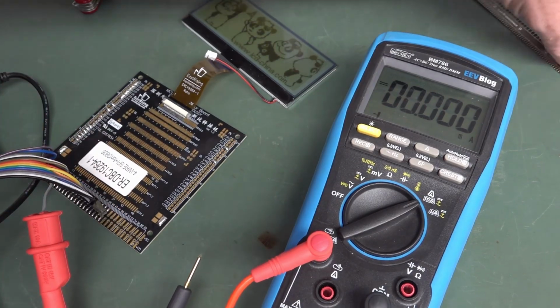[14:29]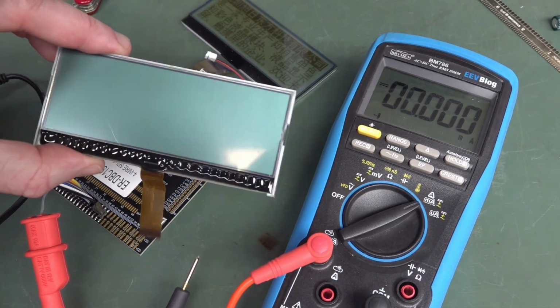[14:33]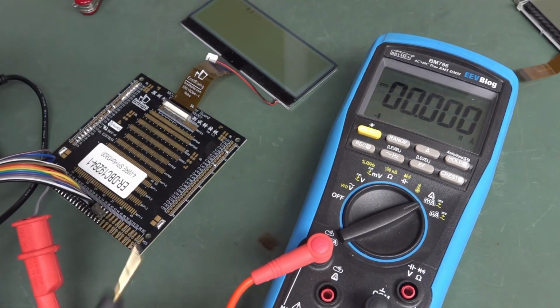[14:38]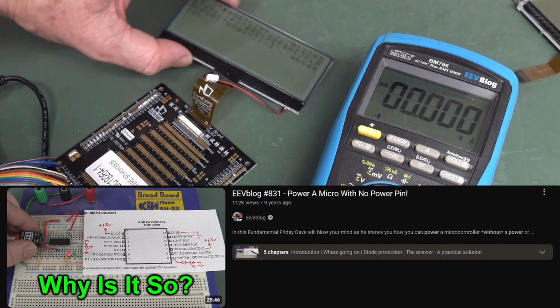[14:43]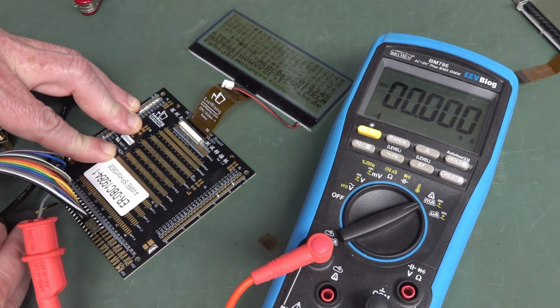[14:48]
Bonus. Well, I've got the correct power pin now, which is pin 19 down here, and which is offset by 4, because I got the data sheets goofed up because I have another display here, which is completely different, which I might show you later. Anyway, you can see that it is actually working with no power pin, because I've done a video on that, and I'll link that in. But let me now plug in the power pin, which will override it being driven elsewhere. There we go, making contact, 280.
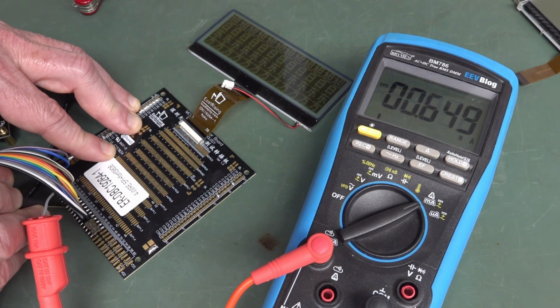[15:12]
Well, and you can see it just reset. It dropped down to, what, 180? As you can see, it's put in more data on the screen, so it's going to increase, and it'll increase as it puts more on there. But the datasheet value is 800 microamps, and it looks like 650. Okay, so yes, if all dots are on, then yeah, it could take 800.
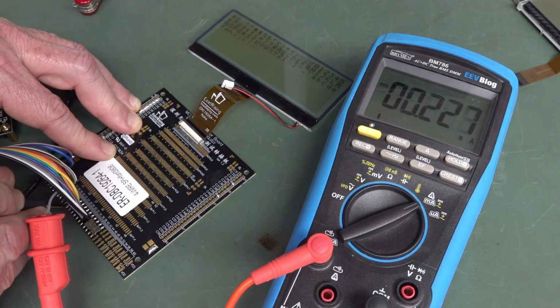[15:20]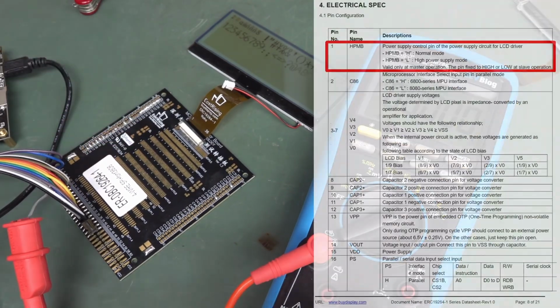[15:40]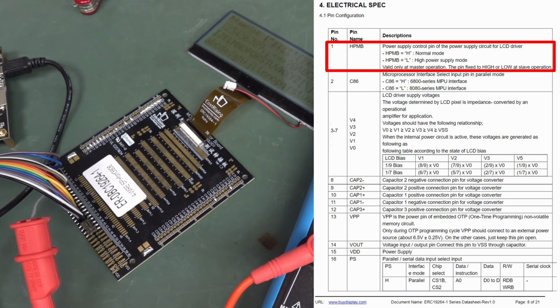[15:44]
And really, I'm after a low power display. So drawing, say, 250 microamps displaying, say, a clock or a timer as it's ticking over or something like that, that's actually reasonably significant. So it would have been nice if the LCD had less than that. So, interestingly, in the datasheet, have a look here, it has a high power and low power pin. So I wonder what's going on there.
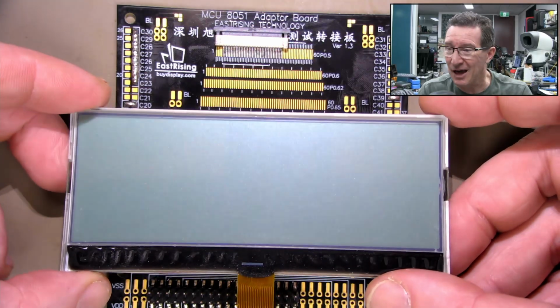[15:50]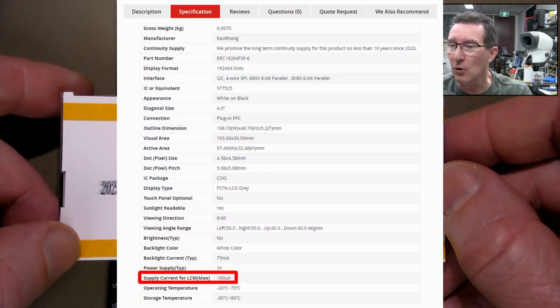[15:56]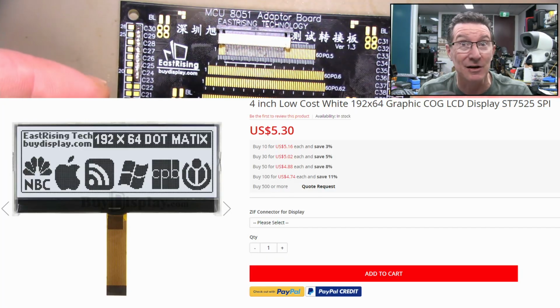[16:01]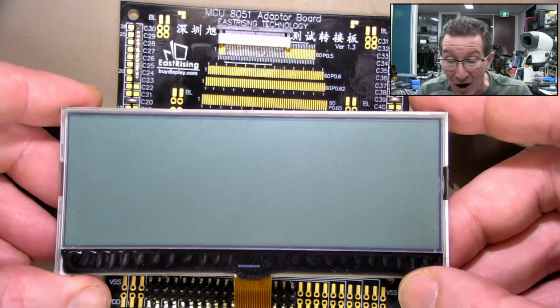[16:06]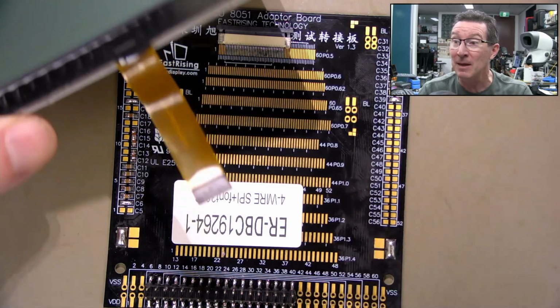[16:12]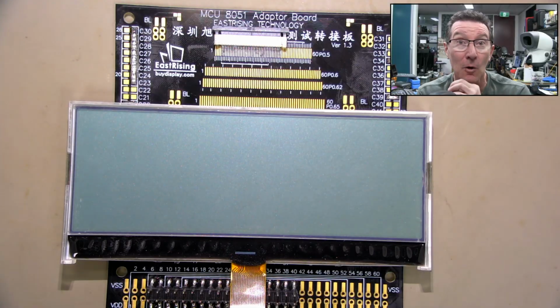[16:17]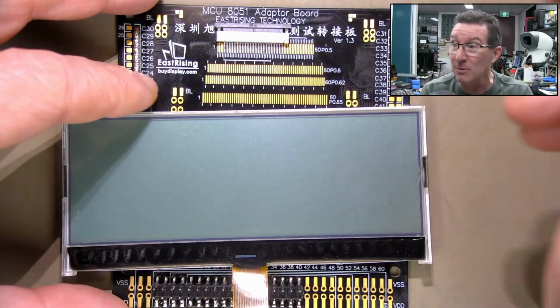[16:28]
So I wanted to try out this other LCD that I got, which supposedly has, according to the datasheet, lower power consumption. And it's the same part number, but it's a -6 instead of the -1. And oopsie, turns out it has an entirely different chipset in it. That means that the firmware that's programmed into the demo board is almost certainly not going to be able to talk to this. And I looked at the website. Website's absolutely fantastic. You can download the schematics for the demo board. You can download the programming software for it and all sorts of things. They've got all these documents that tell you how to
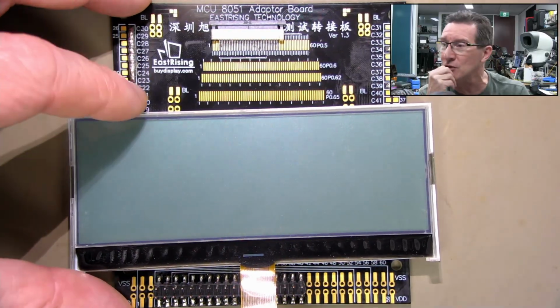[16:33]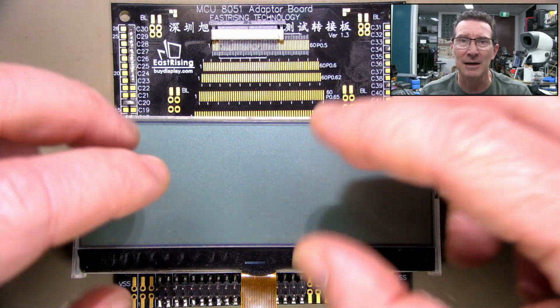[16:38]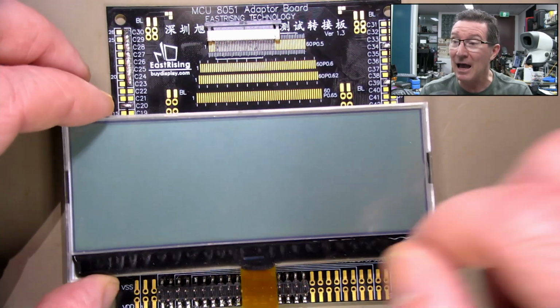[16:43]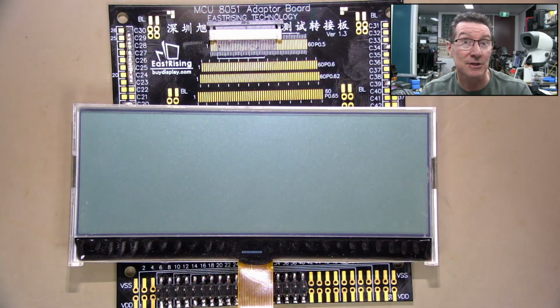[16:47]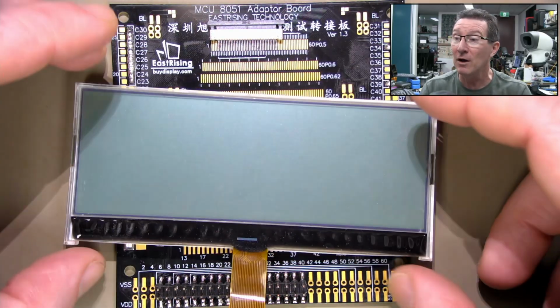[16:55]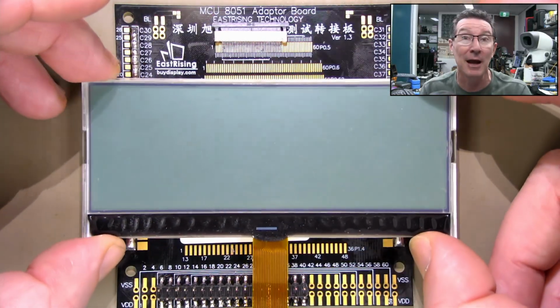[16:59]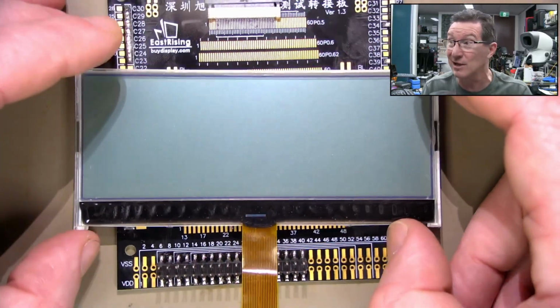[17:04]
install the programming software and do all sorts of things, which is great. They tell you how to download your own fonts and images and things like that. But what they don't tell you is how to actually drive another different LCD. So essentially it looks like you've got to buy another demo board which they've pre-programmed and pre-set up and wired for this particular board. And I didn't know that. When I got it, I thought, oh yeah, I'll be able to fairly easily change some jumpers or something, but it doesn't look like that's the case.
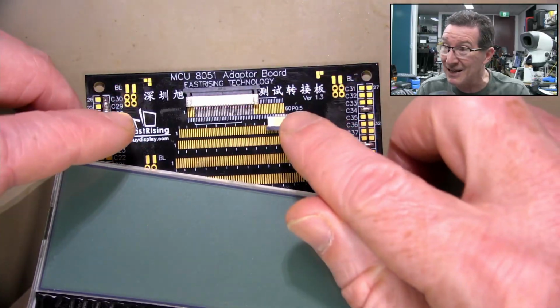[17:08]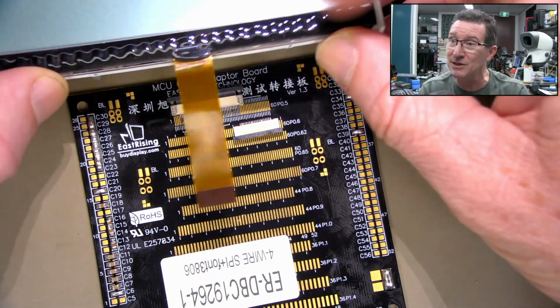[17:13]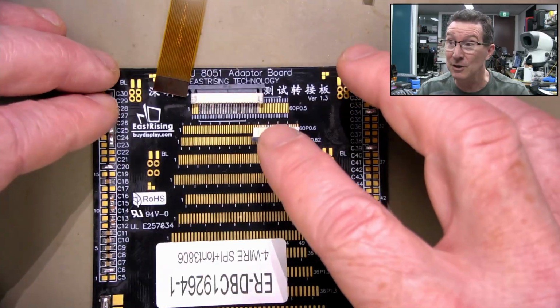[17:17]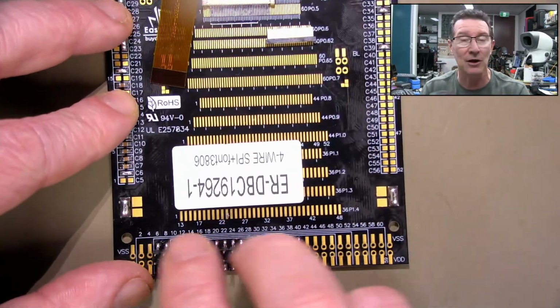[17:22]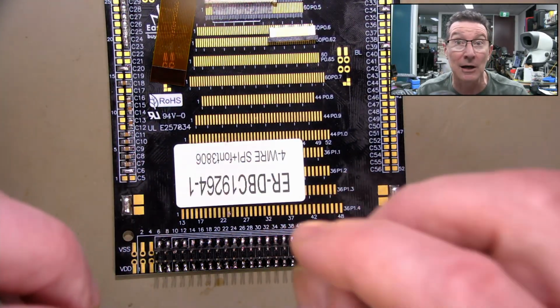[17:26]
Anyway, so what I thought, I did actually get the connector for it, because this is a different display, it's not as many pins, doesn't have the font chip built in, but that doesn't matter. So what I thought I'd do is actually hook up this LCD to this board so that I can get nice pin headers like this, and then I can get an Arduino or something to actually program this.
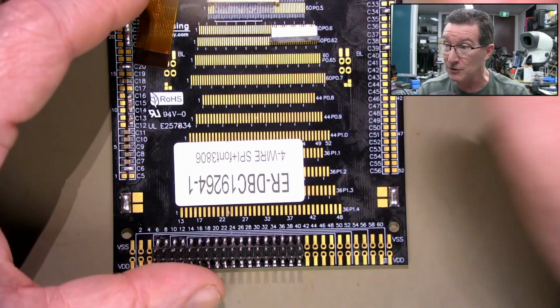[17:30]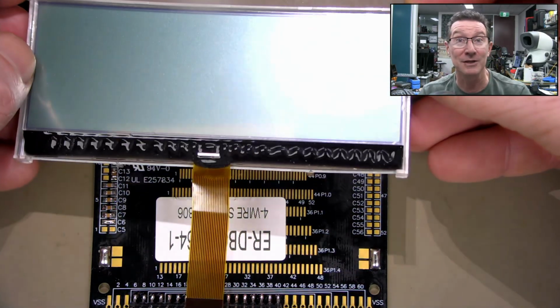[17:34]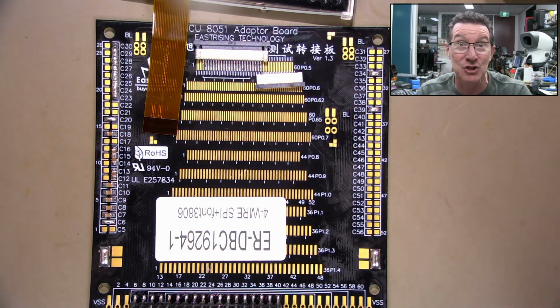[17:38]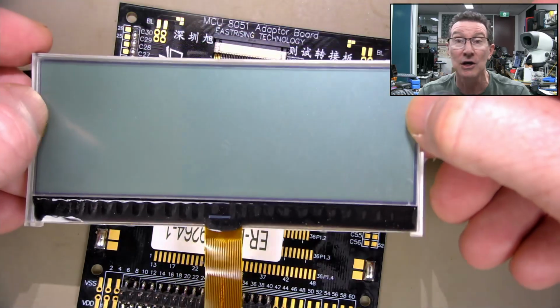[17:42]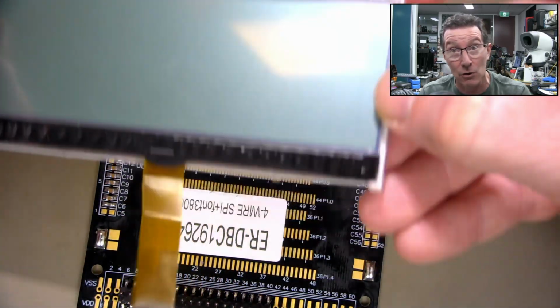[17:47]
Now maybe I can vibe code, AI code, just to get it running very quickly and see if I can just get something on this screen to be able to actually demonstrate and see how good the contrast is, because this is lower cost, lower power, but same resolution and same size. So yeah, it's definitely worth trying out.
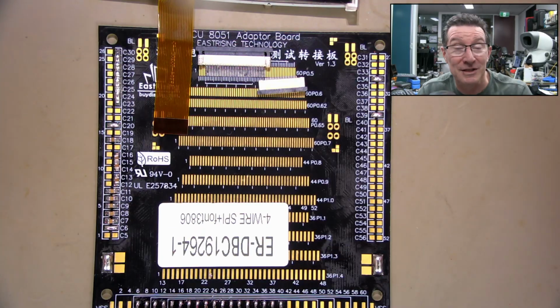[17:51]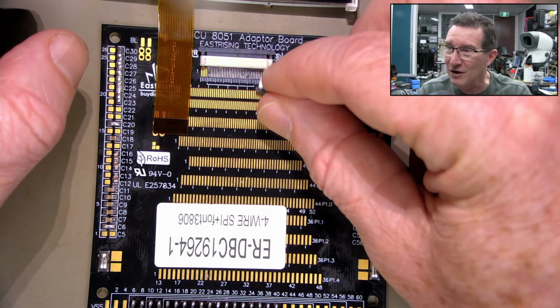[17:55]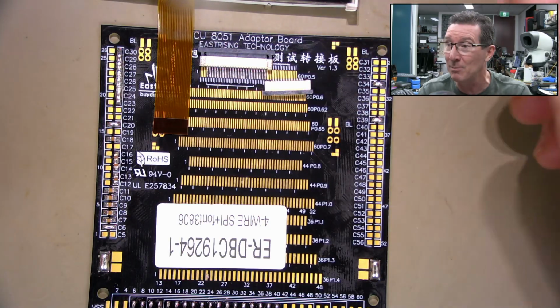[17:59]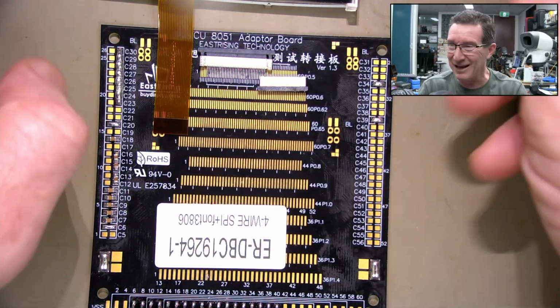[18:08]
Now, I could just order the demo board, of course, and it'll get here, but it's another week or something. So I thought I'd at least try this now. And the demo board's cheap. It's only like $22, but you've got to pay postage on top of that. So, it's not really worth an hour of my time just dicking around here, but I do kind of want to sort of get this running now.
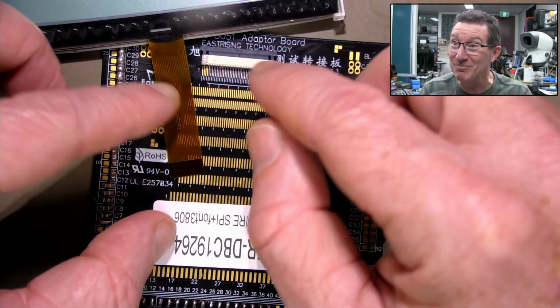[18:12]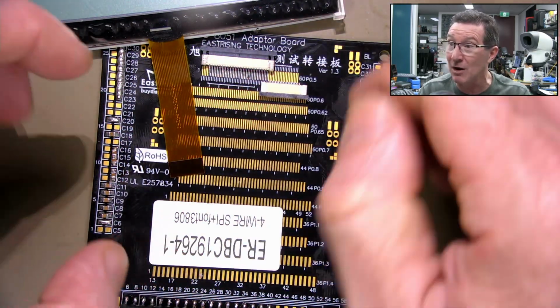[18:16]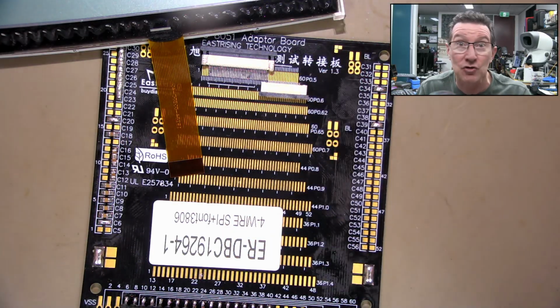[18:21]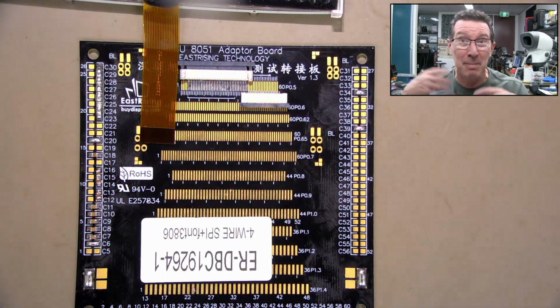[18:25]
So I thought I'd at least spend a little bit of time actually just trying to hook this up, figure out which pins I need to strap and everything else, what caps I need to put in, etc. And then just try and program it with an Arduino and just get some AI code to just pump out anything. I don't care what it is, just want something on the screen.
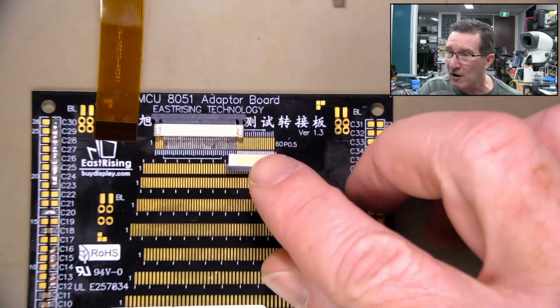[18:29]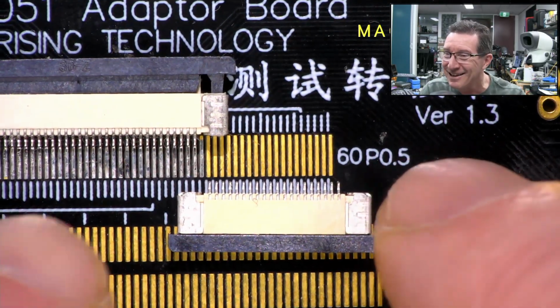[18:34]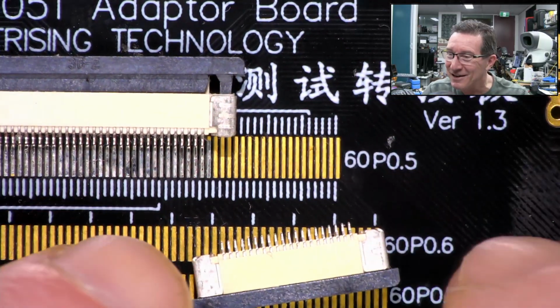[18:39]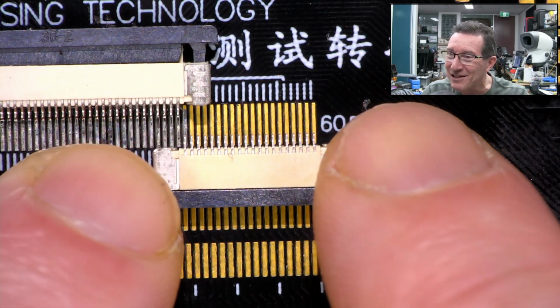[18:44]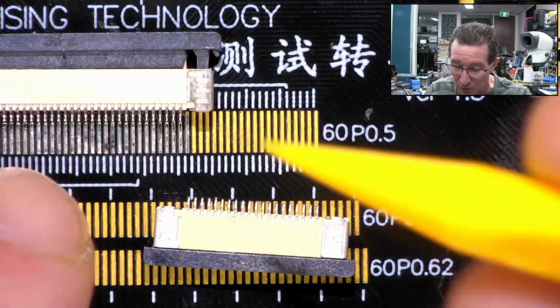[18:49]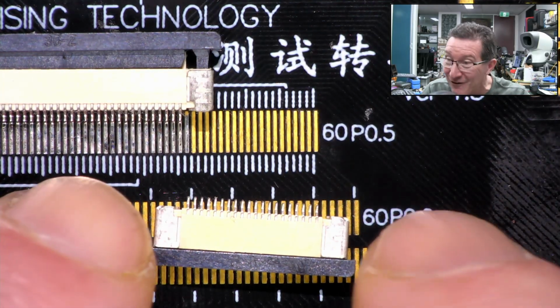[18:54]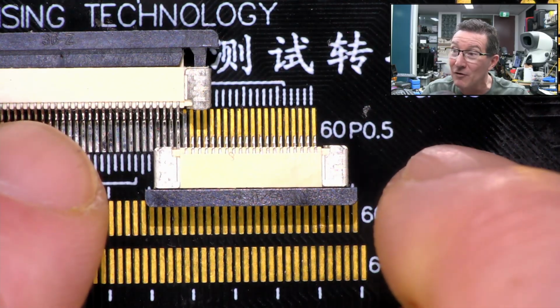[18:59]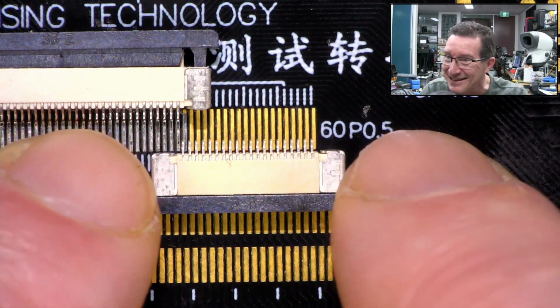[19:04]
Now, this is 0.5 pin pitch, and sometimes you win, because look at this. I can't fit it this way, but I can fit it in this direction, and it perfectly fits with one pin. This last pin, which looks like it's soldered in, is not. It's got some solder on it, but there's no actual pin there. So I can put it in this direction, and beautiful. Yeah, so pin 1 will be over here, so I've got to flip the numbers and everything, but everything's routed out. So yes, that's a win.
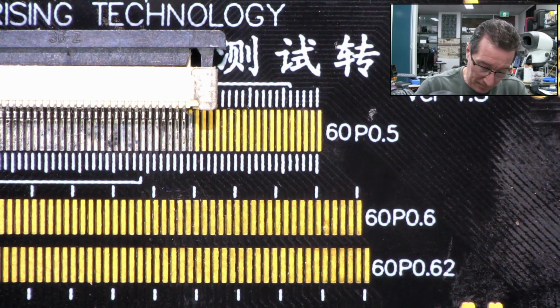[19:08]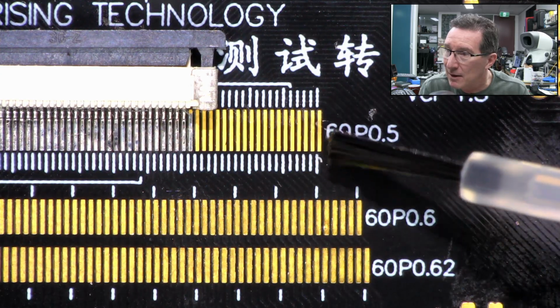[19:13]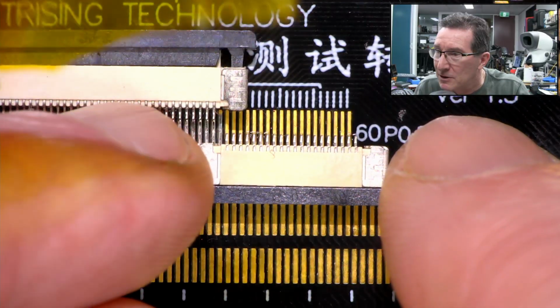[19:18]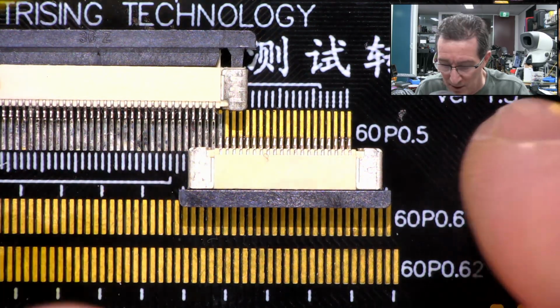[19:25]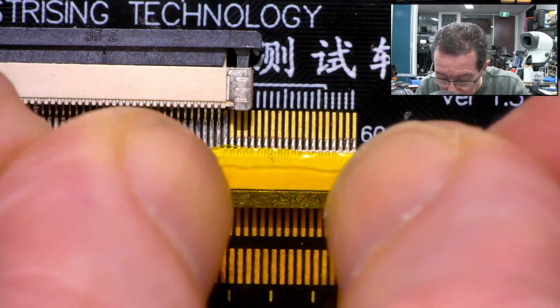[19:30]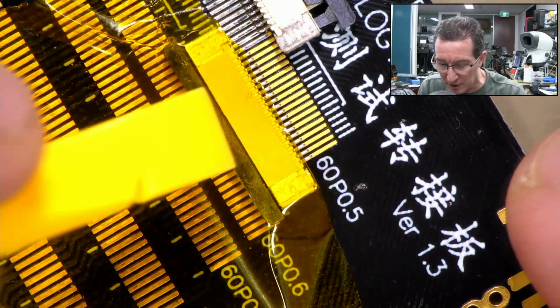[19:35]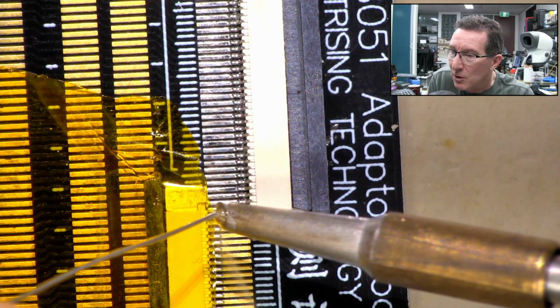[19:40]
So I'm going to solder that on. So let's solder this on. I'll just put down some flux. There we go. Bobby Dazzler. And we'll place this on here. And because these are really hard to hold, keep holding down while you actually drag solder, I'm just going to hold it in place with some Kapton tape. It's not going to sit flat, so probably have to put a little bit of downward pressure on it like that. But apart from that, we should be right. So we'll just use my weld tip.
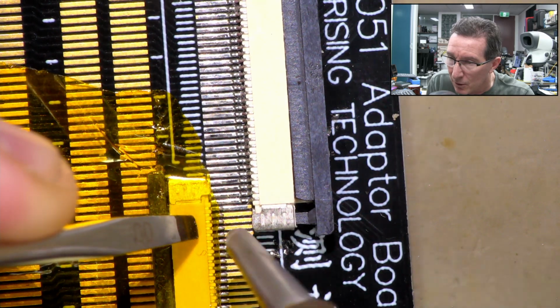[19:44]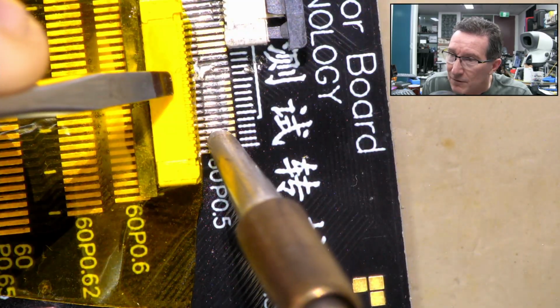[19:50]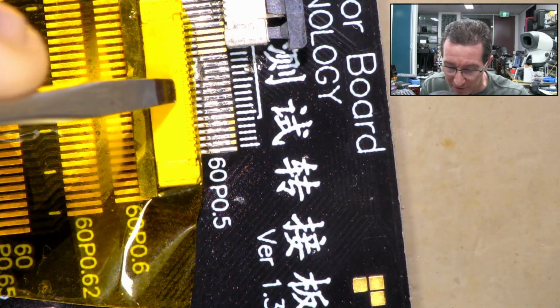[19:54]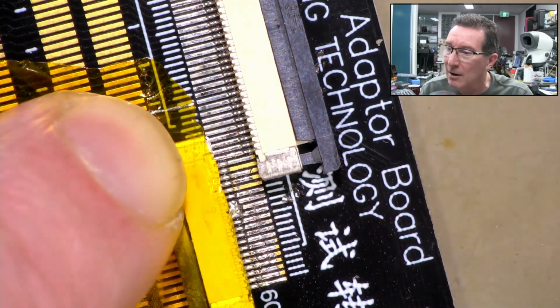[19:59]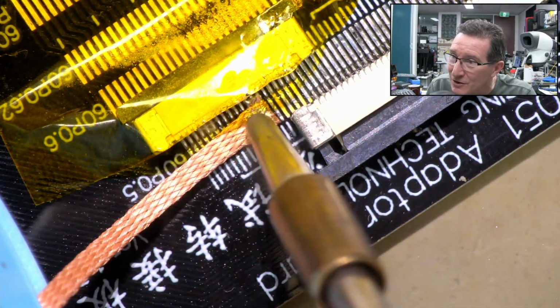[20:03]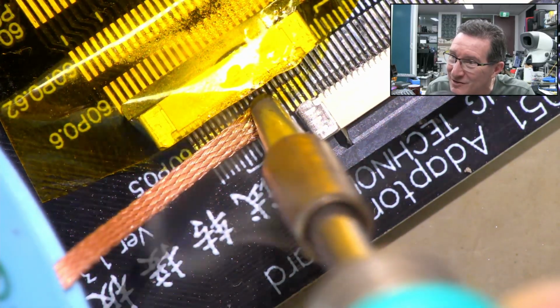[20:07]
Oh, whoa, accidentally, whoa. There we go. My guts are a bit there. Can fix that up later with some wick. That's pretty poor effort. Yeah, couldn't get that one in there. Might need a smaller tip to get in there. Unfortunately, I made an accidental contact when I first did that. So anyway, let's wick some solder away from there.
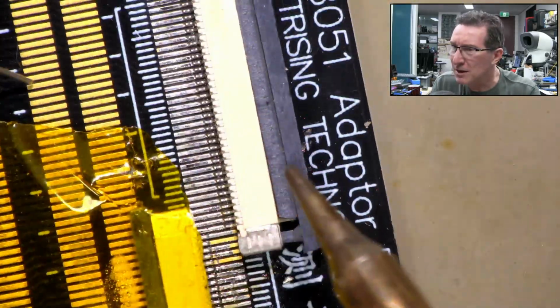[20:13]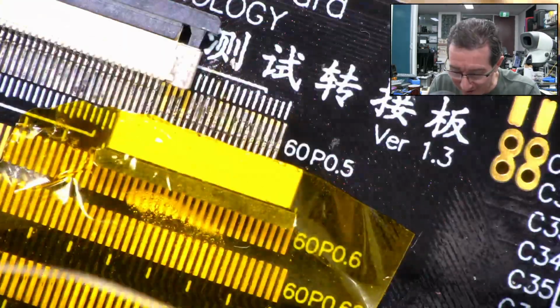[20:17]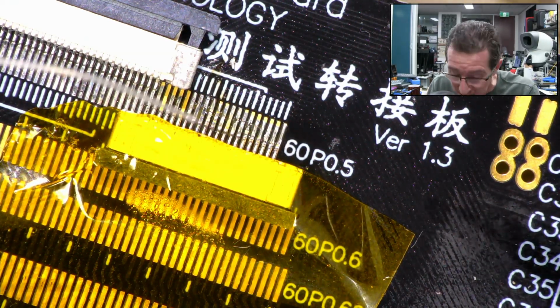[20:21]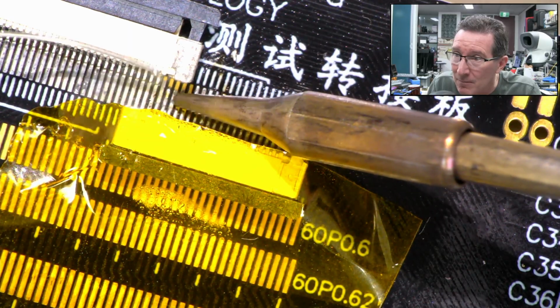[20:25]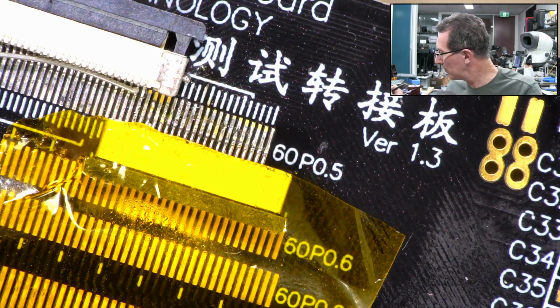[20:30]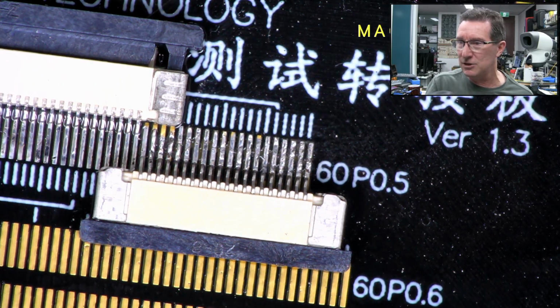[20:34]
Now, unfortunately, my small tip desperately needs to be tinned, but I can't find my tinning stuff. It was here, my tin of tinning stuff was here the other day, I swear. There we go. That's the ticket. Yeah, get rid of that ball. All right, there we have it. It's not pretty, but that is soldered.
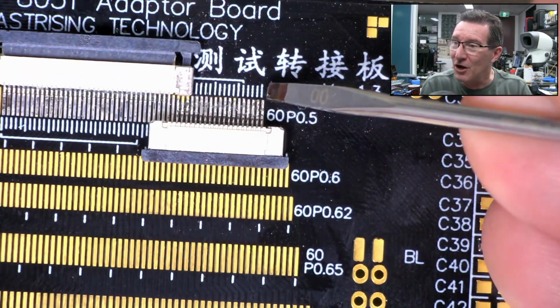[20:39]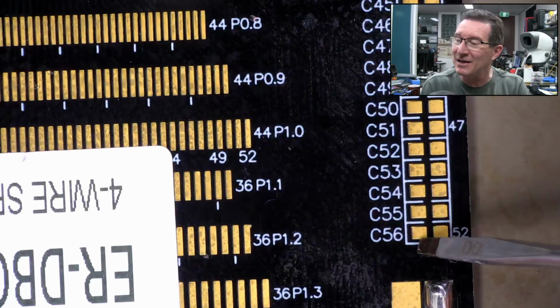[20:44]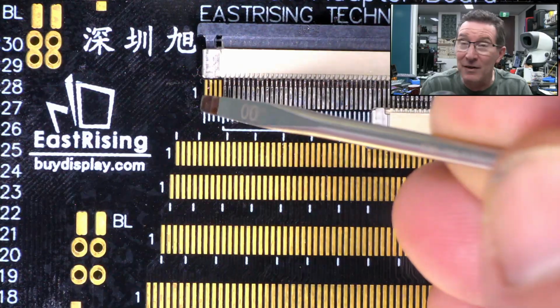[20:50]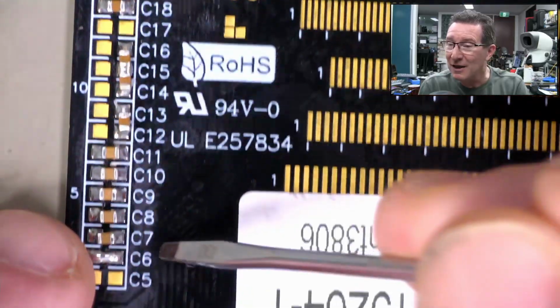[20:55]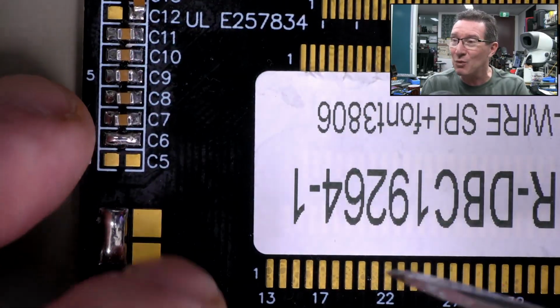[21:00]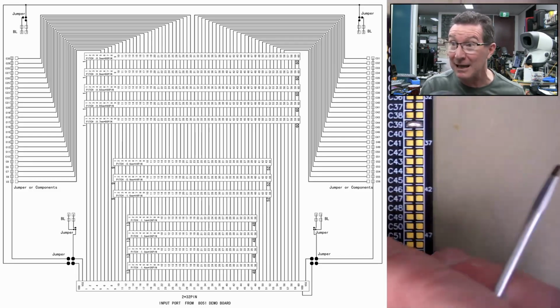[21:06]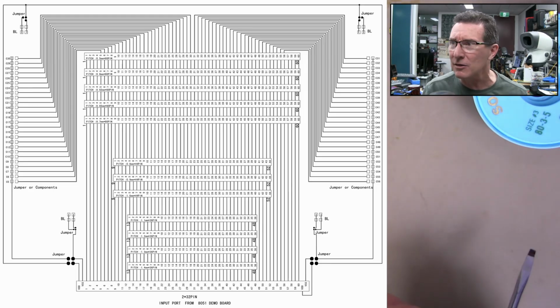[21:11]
So, it just dawned on me that these 4 pins over here, the foremost outer ones, aren't actually routed out to any of these down here. That's why they started at 5 on the 5th pin, because the 5th pin is the first one that's actually routed out. That's why it's C5 down here, because it's pin 5. So pins 1 to 4 aren't actually routed out there. I don't know why. I'll put up the schematic for this board here. I'll overlay it, and you can see that they don't route out those pins, which is, I don't know why.
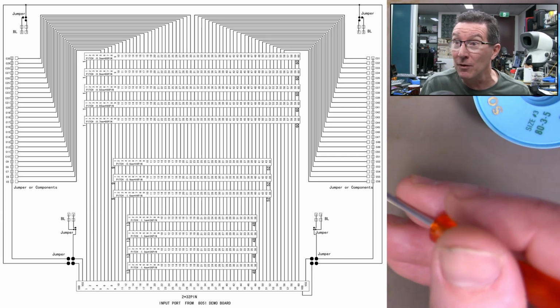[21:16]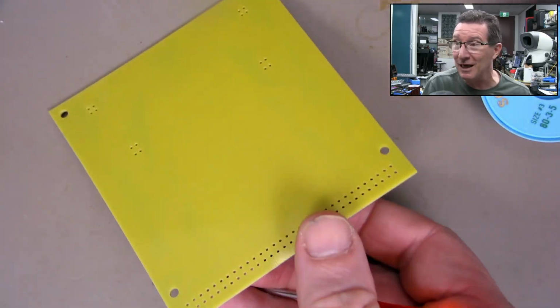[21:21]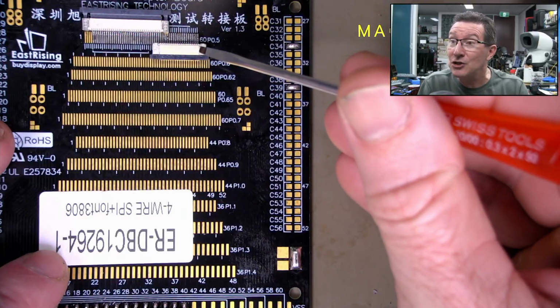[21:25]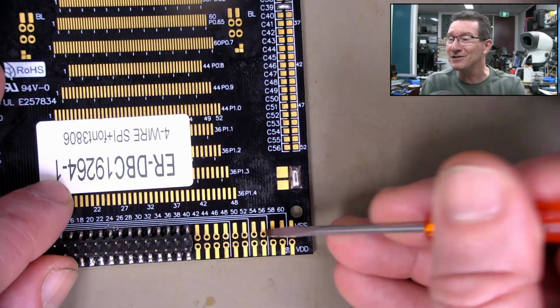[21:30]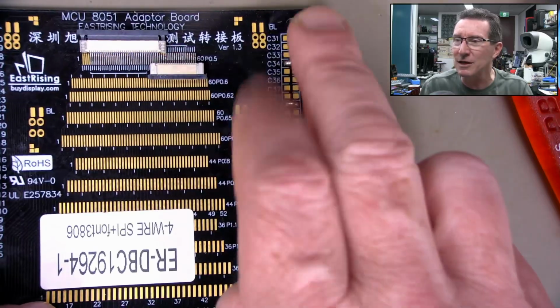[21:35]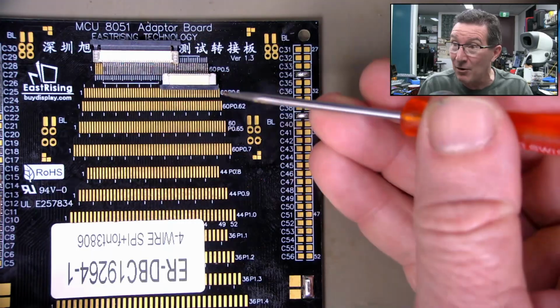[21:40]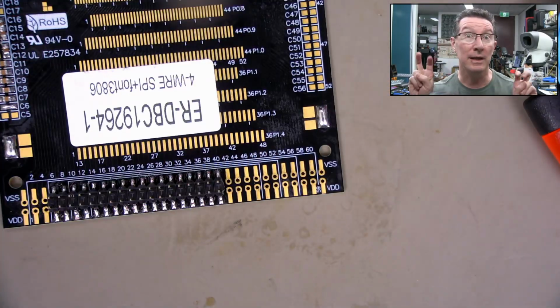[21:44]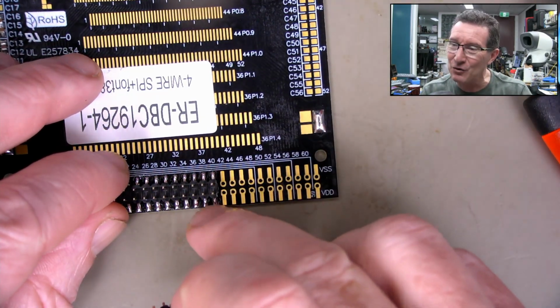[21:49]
There's enough room on the board. Just make the board slightly bigger if you need more routing room or something, because there is nothing on the other side. This is a single-sided board. But anyway, luckily, they do actually route out down to here, so I can actually connect physically down to here. So that's good. But yeah, if I just want to strap things easily, it's just not as nice on those 4 pins. But those 4, I believe pin 4 is the power pin, and some of the others are, yeah, like a drive voltage or something. And my whining continues. I don't have the right angled ones like this.
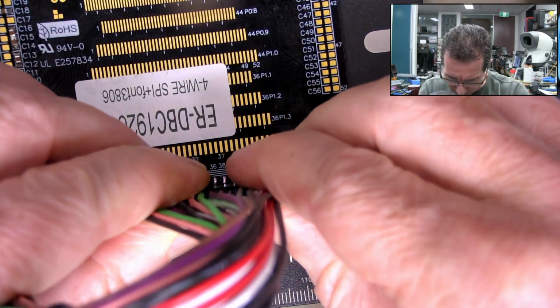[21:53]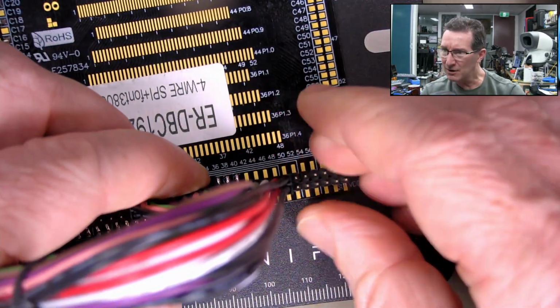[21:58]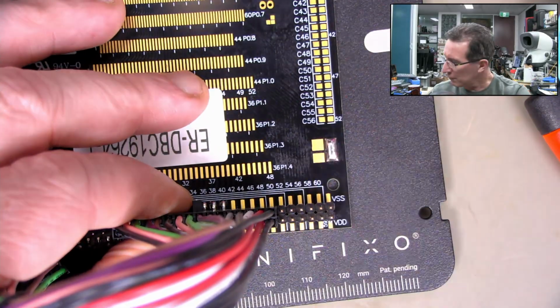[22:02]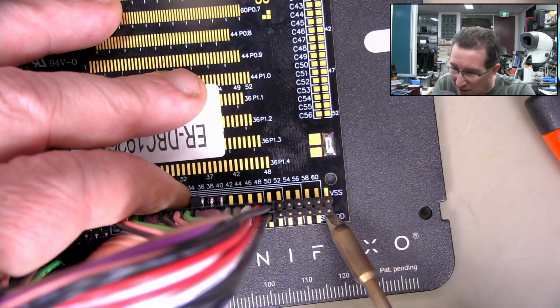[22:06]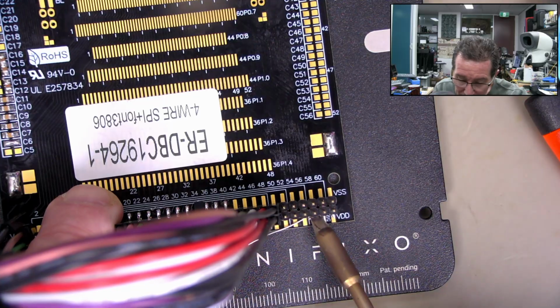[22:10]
And okay, so what I'll do is I'll just put it in there on a flat plate, and then I will stick this down so that it holds them aligned, and that will give me enough room under there to solder each individual pin. I will spare you the boring details.
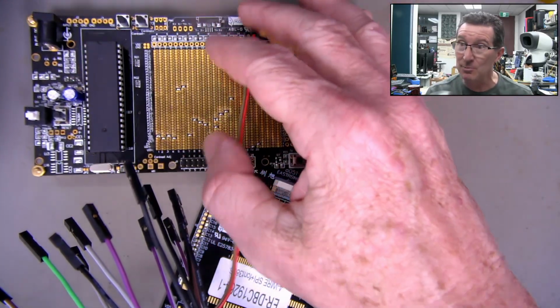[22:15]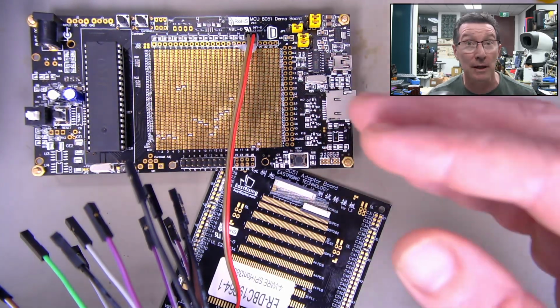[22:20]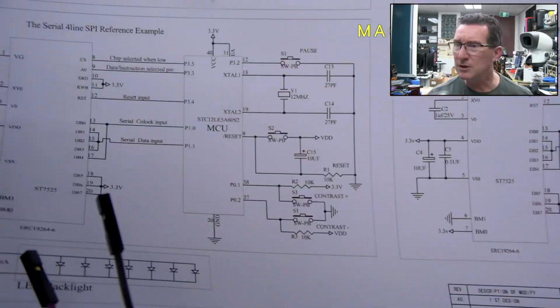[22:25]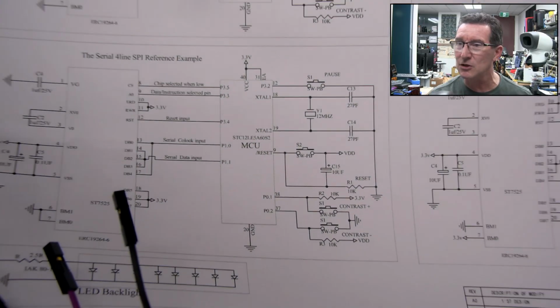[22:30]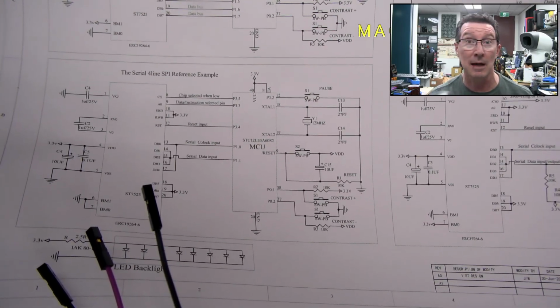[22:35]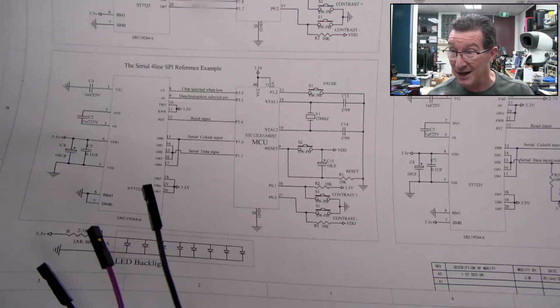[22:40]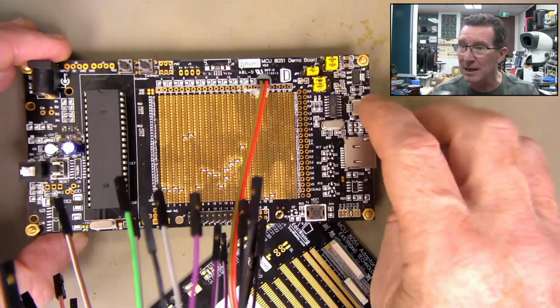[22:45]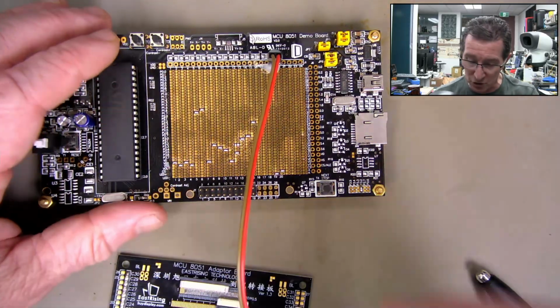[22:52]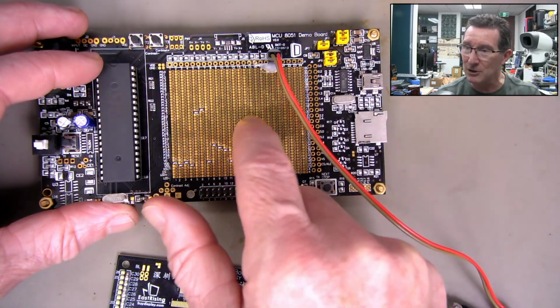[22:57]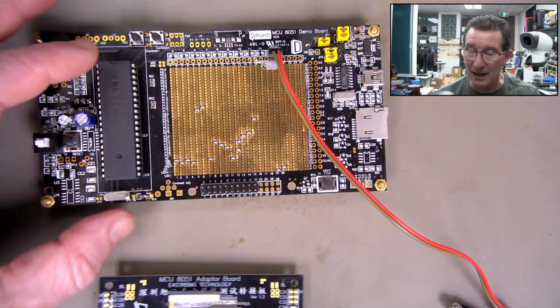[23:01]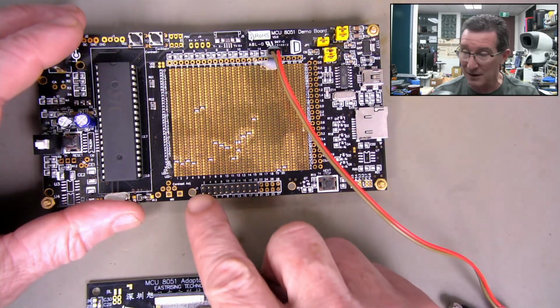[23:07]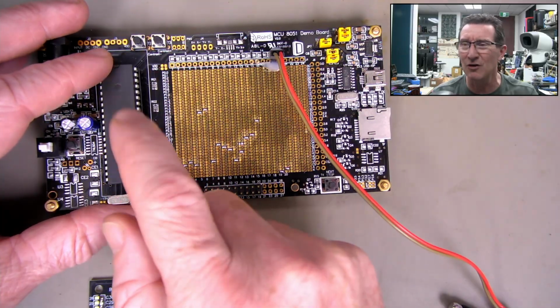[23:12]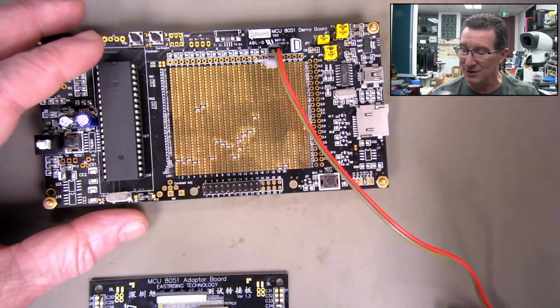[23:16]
8051-ish microcontroller. But then I've got to figure out how all this programming configuration matrix works. Obviously they've programmed these in for the specific pin header that we had for the display that we've just played with, but it's going to be different for this new LCD, which is a totally different pin out and everything. I'd have to check the source code for the old one and then figure out which pins are the serial outputs, etc.
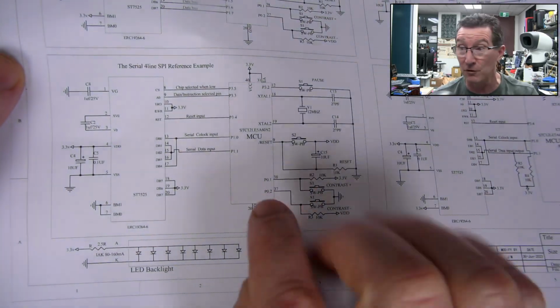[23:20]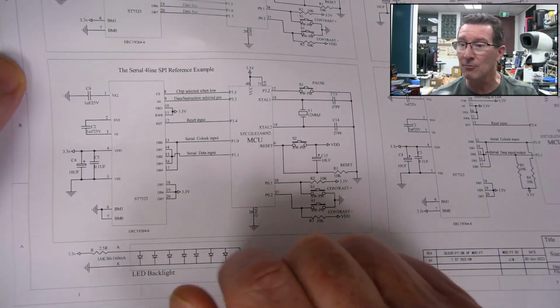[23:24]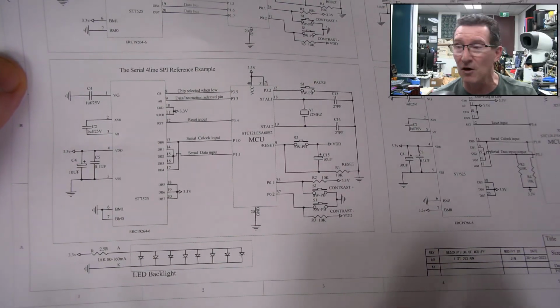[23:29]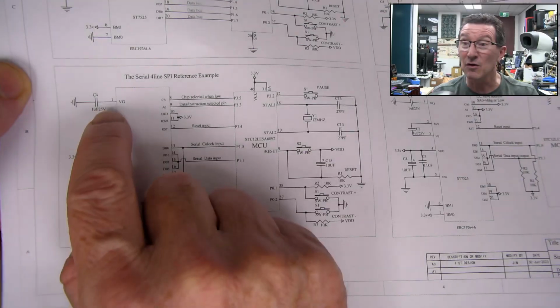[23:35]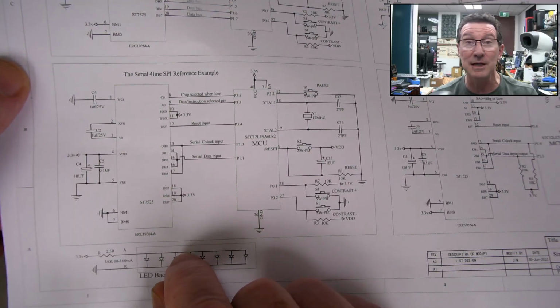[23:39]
But basically, anyway, we've got the schematic for this new LCD. This is if I'm using the 4-line SPI reference. This is the display. It uses the ST7525 chipset. And yeah, this is how you hook it up to the MCU here. So all I've got to do is add a 1 micro cap there, a 1 micro cap between these 2 pins here for the bias voltage.
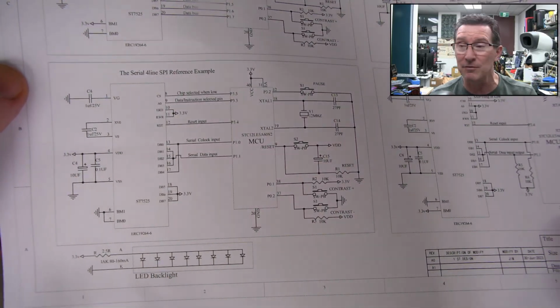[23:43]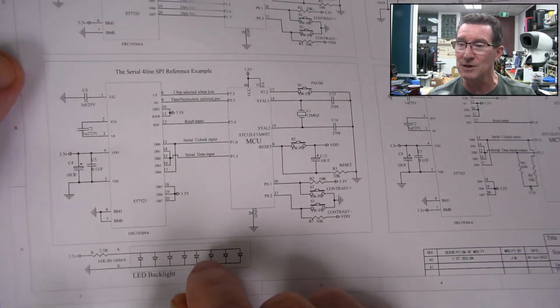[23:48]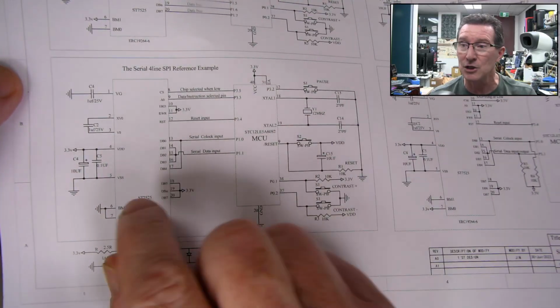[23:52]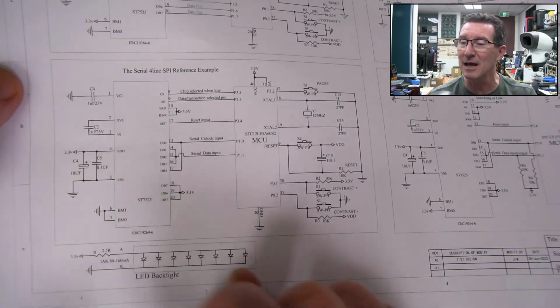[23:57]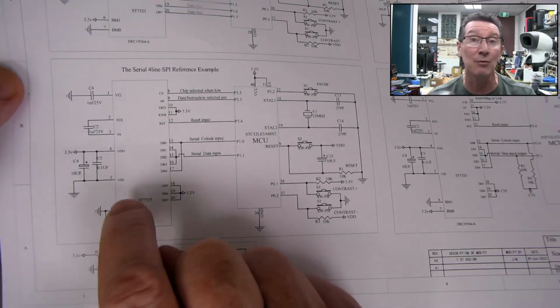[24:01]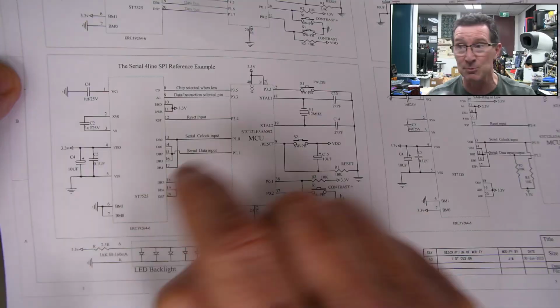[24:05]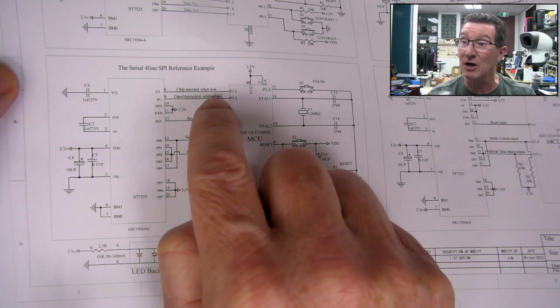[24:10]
This chip is actually easier to drive than the previous one. Like, you need a lot more external caps than this one. So this one's actually better. It's got built-in capacitors which generate the various bias voltages and things. But still need a couple of external caps there. Just the bypass in there, tie a couple of pins here which select the mode. I won't go through the complete data sheet, but this selects the SPI mode, and then chip select, and then data instruction select pin on A0 there.
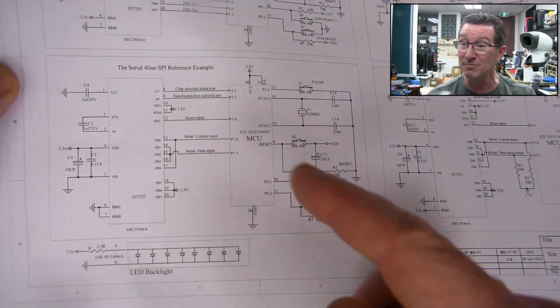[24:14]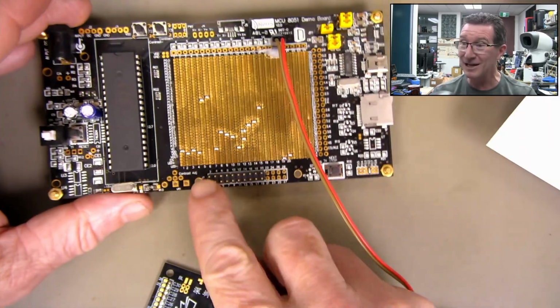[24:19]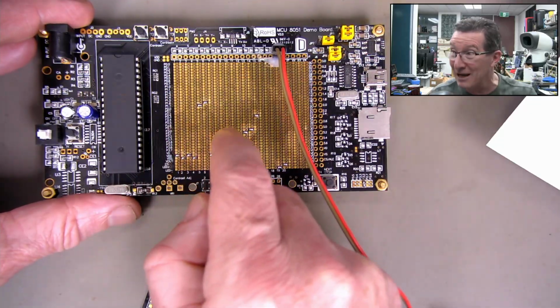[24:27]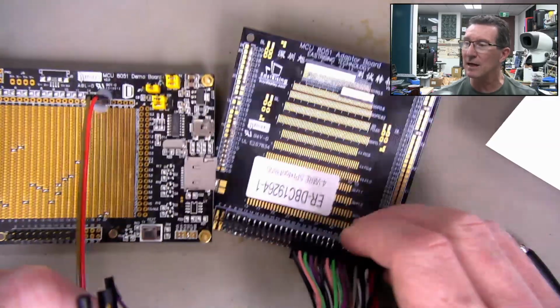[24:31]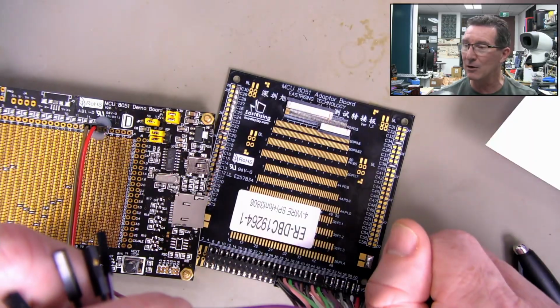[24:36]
And so we only have to, in theory, hook up 4 or 5 pins to here, plus the 3-volt power and ground. And then we hook them up to the right pins on this via this selection matrix. I've just got a wire bundle here, so I'll be using these pins over here. I'll tie some of those caps on here or whatever, and I've got all those pins coming out to this one side. So I think at the moment it's connected to the power pin, but you can restrap that, and I'm feeding in power to different pins now.
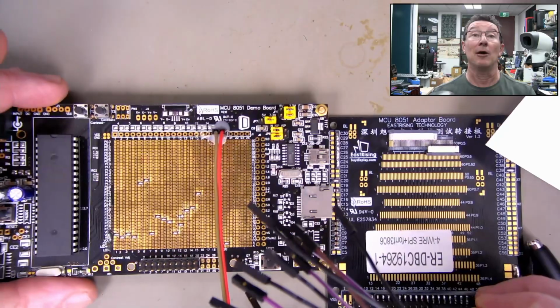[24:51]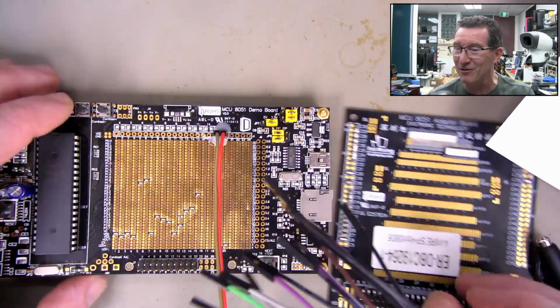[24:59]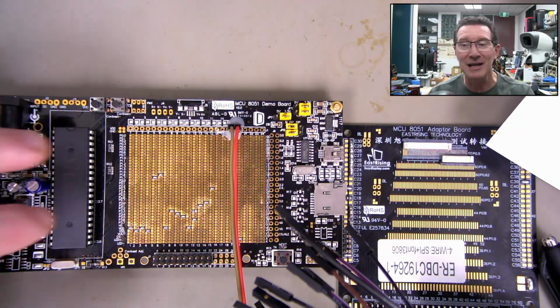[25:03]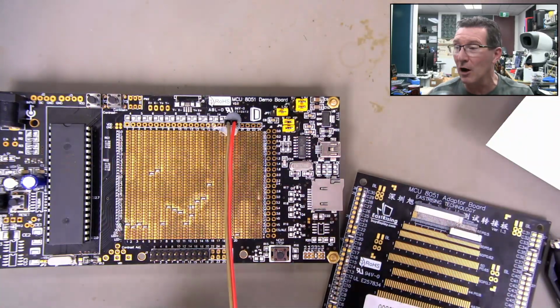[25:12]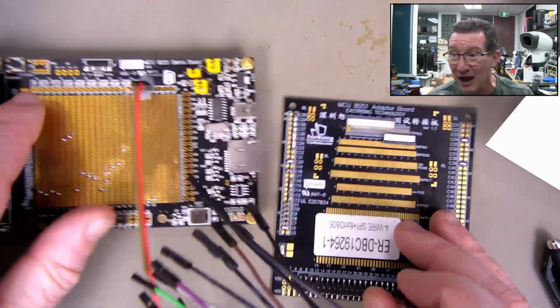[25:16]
But hopefully, if I decode all this, get it correct, and I install the software to program this thing, I should, in theory, be able to use this demo board to reprogram this. It's just when you order it from the factory to match your LCD, they've already programmed it with the correct software. They've already done the correct pins. They've even done the wiring harness for you, and they've configured this board correctly with all the pins. So they've done all the hard work for you.
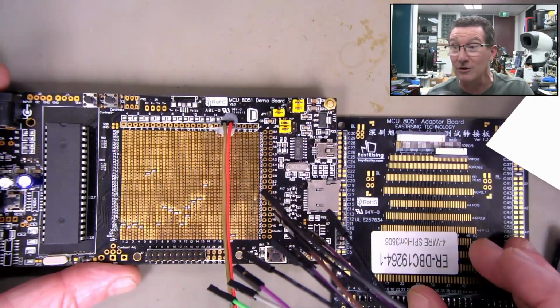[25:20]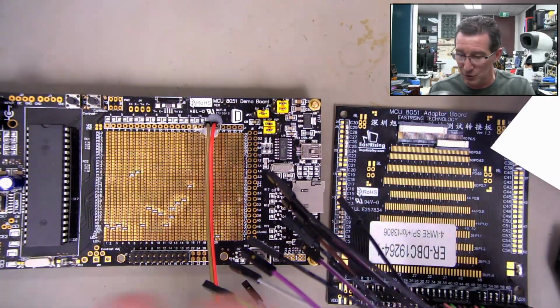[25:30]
So trust me, it's worth paying that $22 US, if you're going to get one of these displays from them, and for $22 you get it all pre-configured and working out of the box. Unfortunately, I don't have that for this new one. Anyway, it'll be an interesting exercise, I guess.
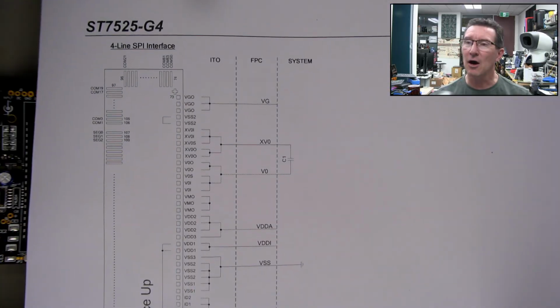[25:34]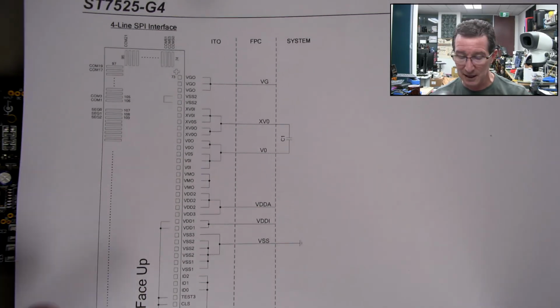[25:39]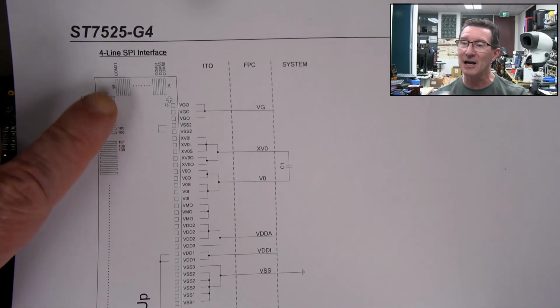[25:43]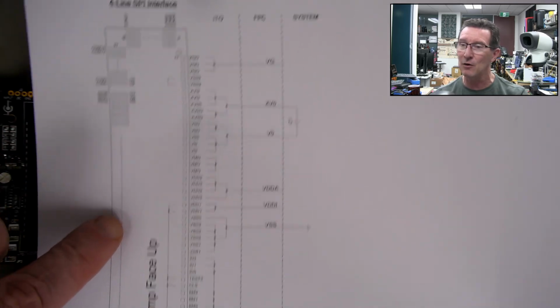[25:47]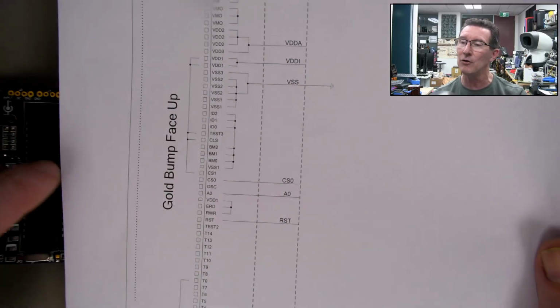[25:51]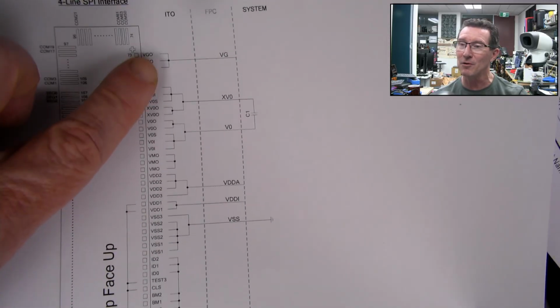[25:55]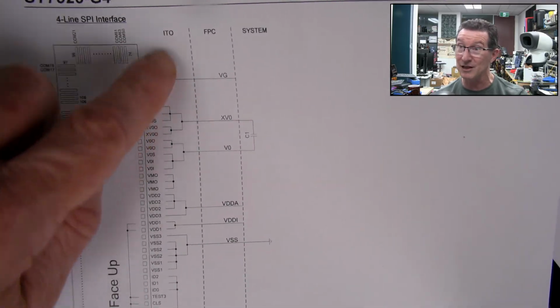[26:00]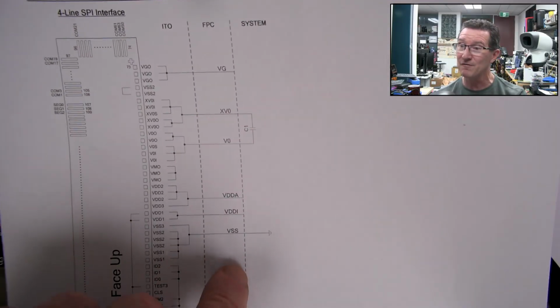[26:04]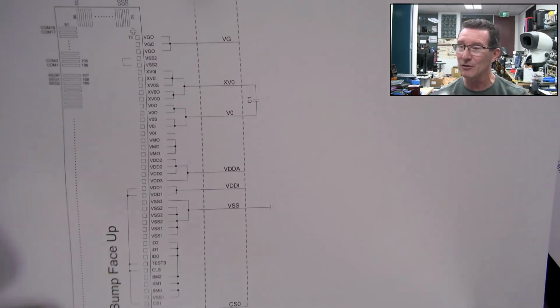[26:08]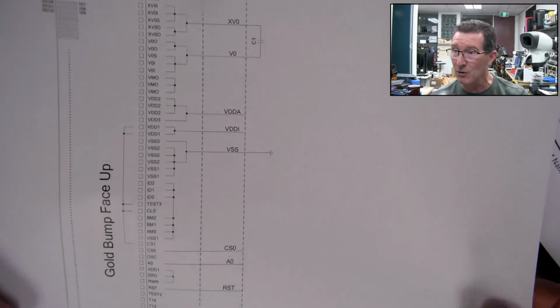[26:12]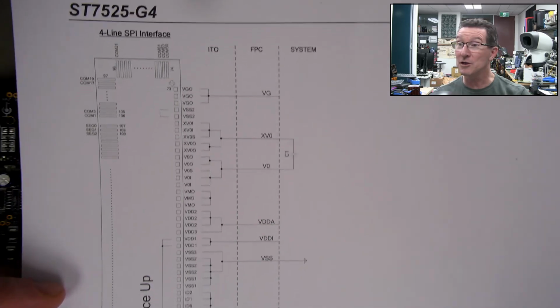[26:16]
And just as an aside, here is the ST7525 interface, and you can see this is the chip on glass, the COG chip that's actually on the glass, and how it drives all the commons here, and then all the segments going down here like this. It's just an assembly note, gold bump is face up, and here's all the pins. So it's actually got a lot of input pins, and they're all tied together, and you can see this is the glass, and this is the FPC, the flat flex interface, the pins for the flat flex. Then the system shows how you just put the one cap we saw across the V0 and XV0 pins there, and yeah, there's not much else to it, but they do supply quite a lot of documentation like this.
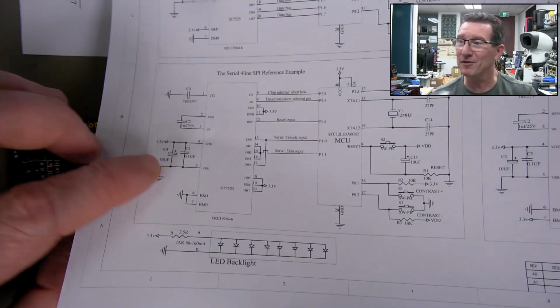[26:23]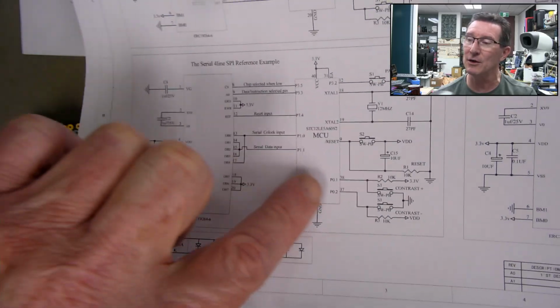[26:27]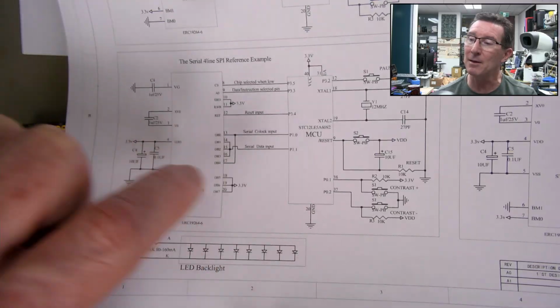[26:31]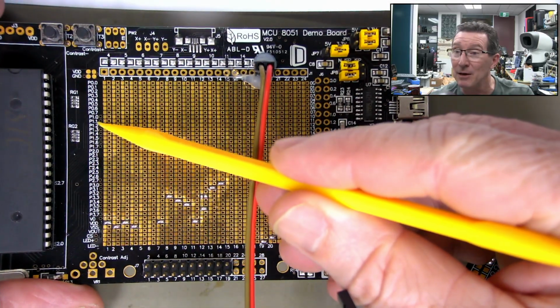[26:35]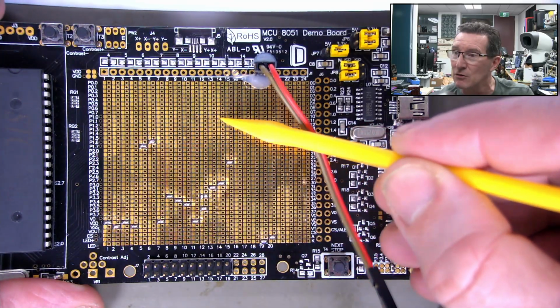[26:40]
You can't fault them. It's very thorough. Actually, first cab off the rank, I'll show you here. It shows serial data input to the LCD, or output from the microcontroller. That is pin P11 there. And if you enter the matrix here, you'll see that P11, that's this row going right across there, has no solder jumpers on it whatsoever. So the good thing is that I can just attach one of those.
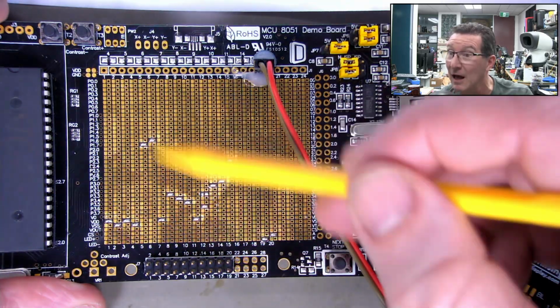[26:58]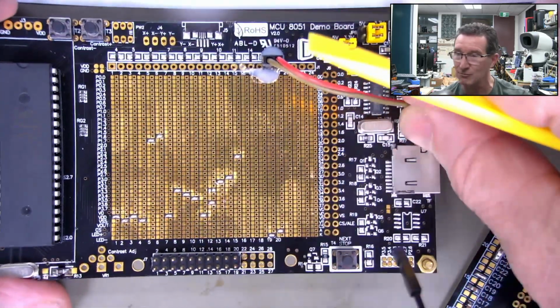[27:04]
So I can go, okay, which pin's not being used? Actually, they're all being used. 1, 2, 3, 4, so like 6. All these numbers here correspond with the numbers on here, and they all go vertically. So it's just an XY matrix. Anyway, I'll do that as a reference shot, just in case I have to go back and drive the old LCD. But yeah, it looks like I'm going to have to reconfigure this.
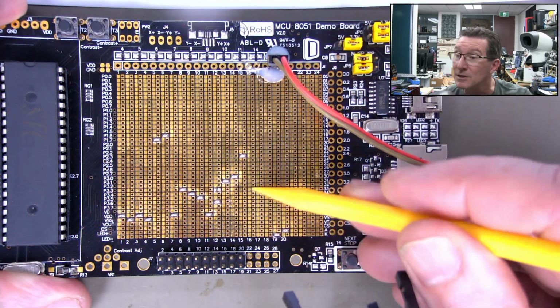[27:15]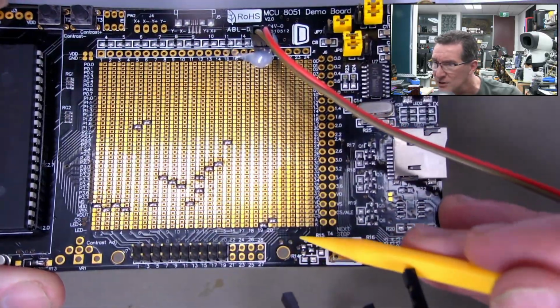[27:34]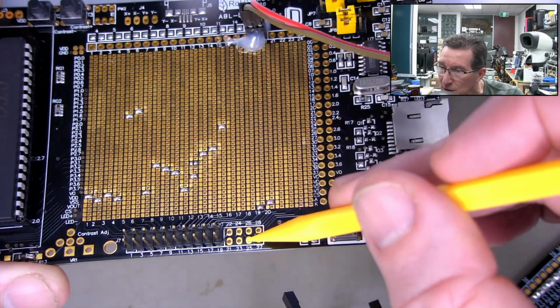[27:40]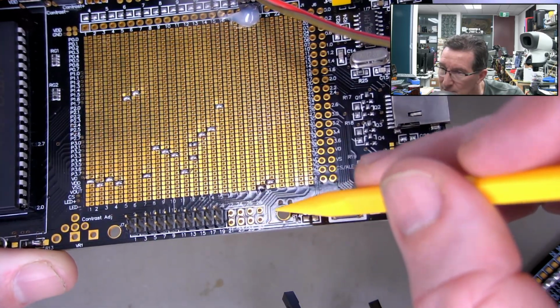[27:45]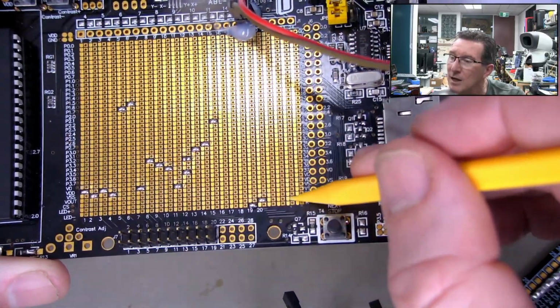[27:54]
Although, hey, look, pin 16 isn't used, 17 isn't used, 18 isn't used, 19 and 20 are used, so I've got 3 spare pins there. If I put some extra pins in here, unfortunately it doesn't go all the way to 28, it only goes 21, 22, 23, 24. I'm not sure why they stopped the silk screen there. The traces seem to go to it. 24 seems to be going to 2 locations, actually. It's hard to see, but is that 20? Yeah, 24 does go off to there. Are they also going to the vertical columns as well?
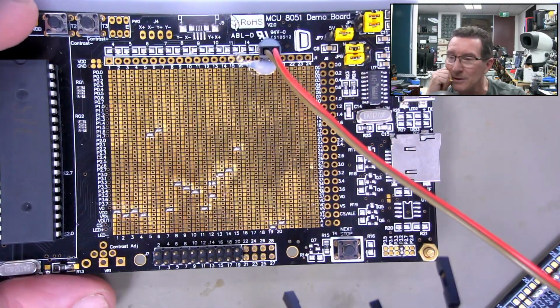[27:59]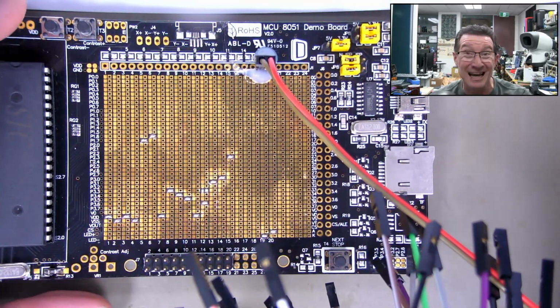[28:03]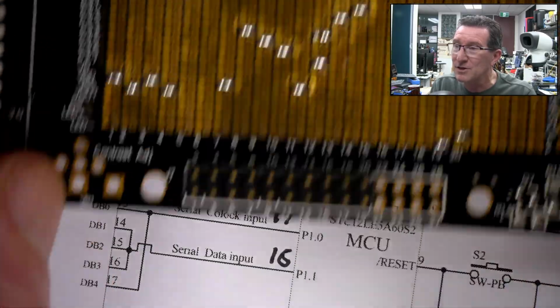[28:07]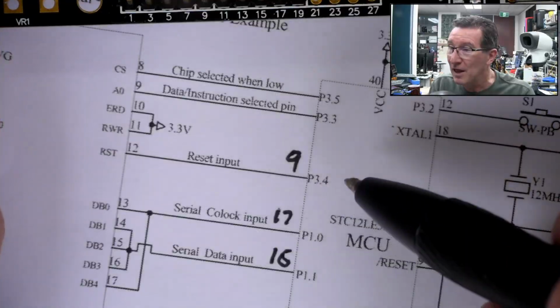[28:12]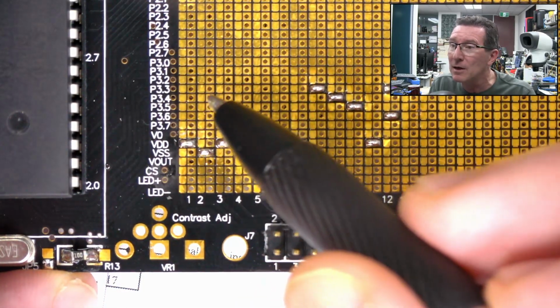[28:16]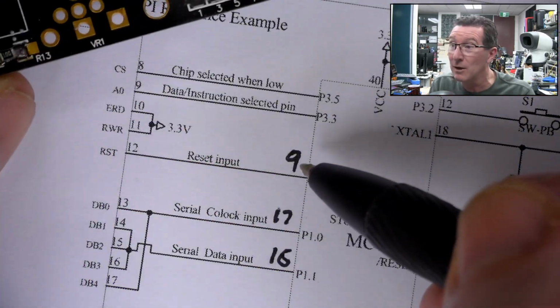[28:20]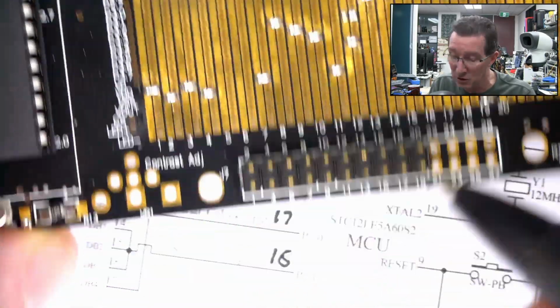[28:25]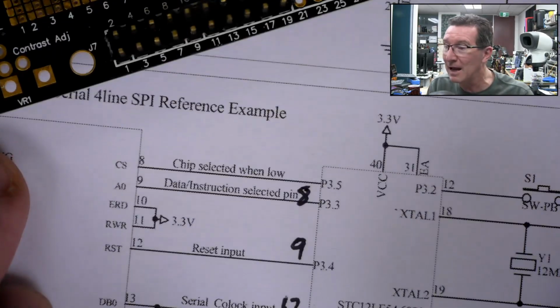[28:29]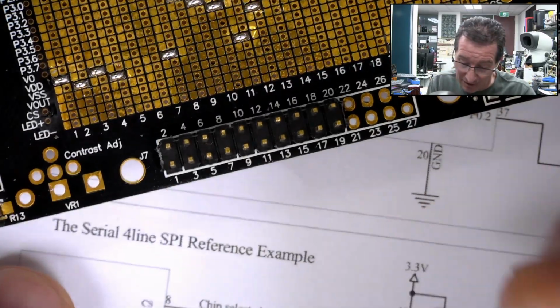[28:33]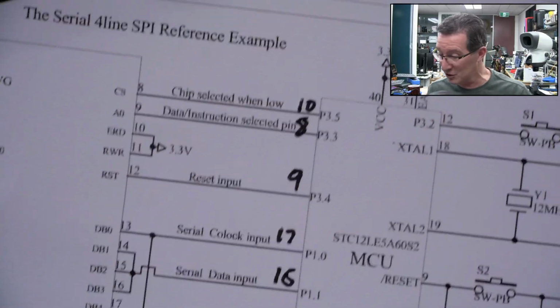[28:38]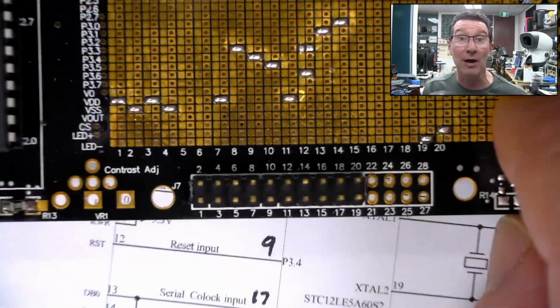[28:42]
So, anyway, there are a few spare pins there I can use without touching the rest of this matrix, and just leave that intact if I need it. This is actually working out quite well. I've soldered in pins 16 and 17 up here like this, but ones like P3.4 are already being used here, so that goes to pin 9. So it's already there. And 3.3 is already being used. That's pin 8. And 3.5 is pin 10. Bobby Dazzler, look at that. I only had to solder in 2 extra pins, which didn't upset the original programming at all.
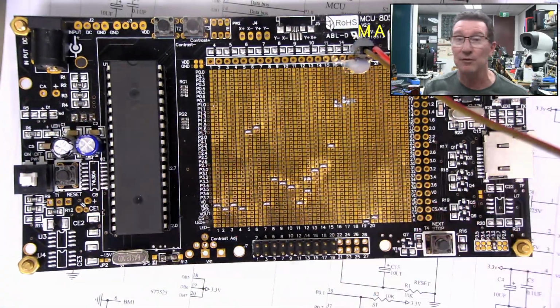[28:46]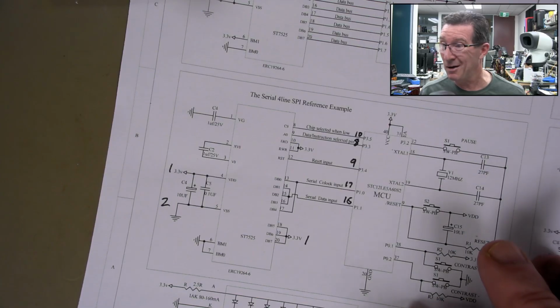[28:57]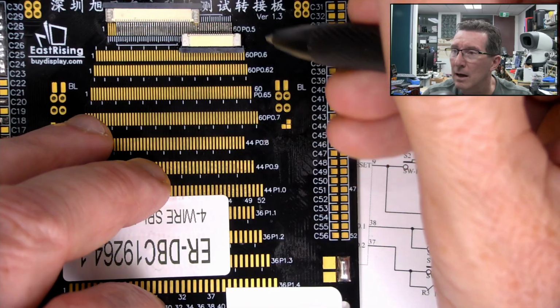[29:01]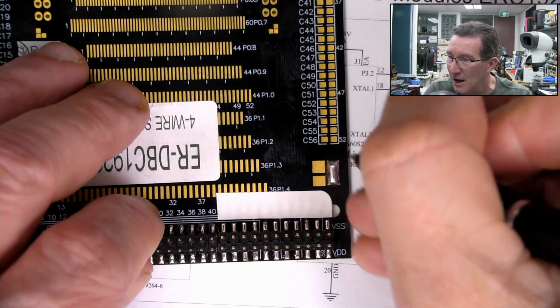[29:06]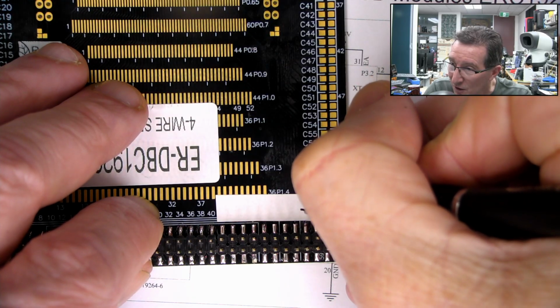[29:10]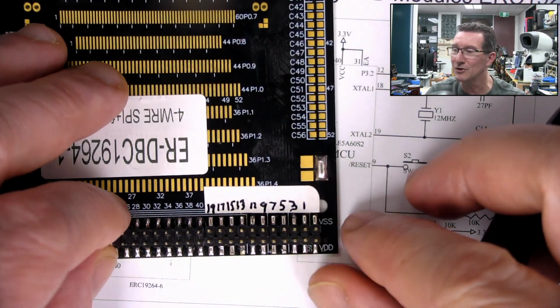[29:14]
But I do have to reprogram this chip, but in theory, if it works, I can just swap between the 2 programs for which LCD I want to drive, and you've got to change the wiring harness as well, but yeah, should work. Assuming I don't goose something up, we should be able to get this working fairly easily. And just so I don't screw this up, pin 60 over here is now pin 1. There you go. So that'll be 319. Right. So I shouldn't goof that up.
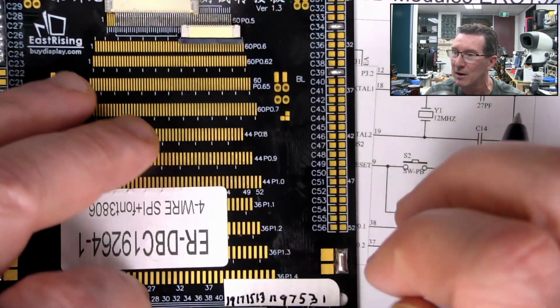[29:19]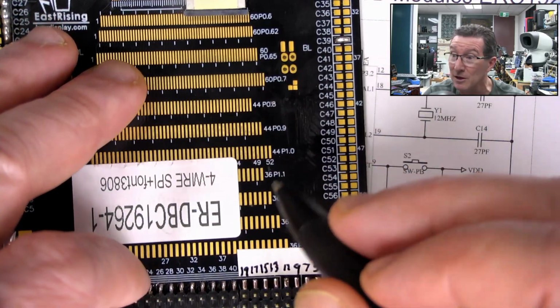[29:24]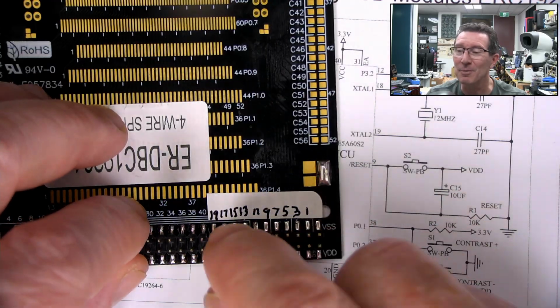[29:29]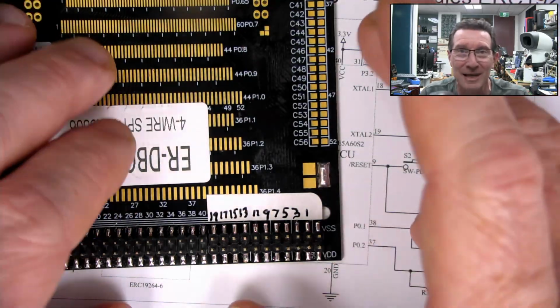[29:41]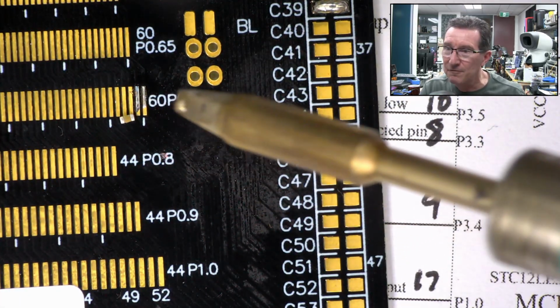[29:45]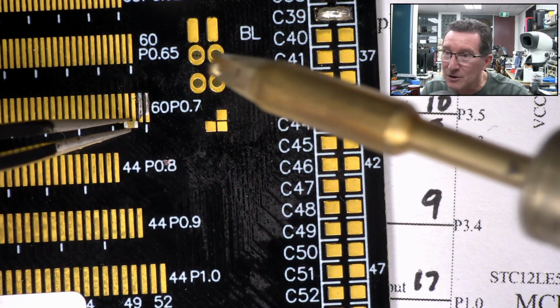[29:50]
VSS VDD, I'll check that goes over to here and I can do whatever. Between the 2 pins, that capacitor between the 2 pins, I can probably put a cap between 2 of the pads here. Just a little pro tip, it's worth going to the effort to just do this so that you don't goof it up, because sooner or later you're going to come a gutser. If I left that at 60 and was just continually visually counting numbers, I would have totally come a gutser. Now I've got a 1 microfarad 0603 here, and unfortunately I have to use this pin pitch here, which doesn't quite fit.
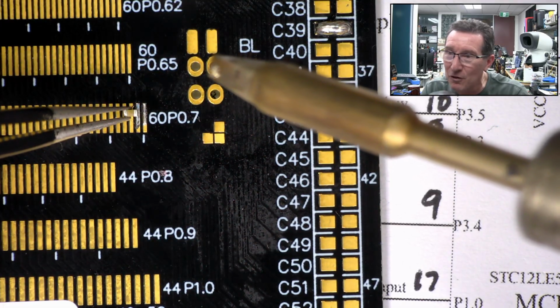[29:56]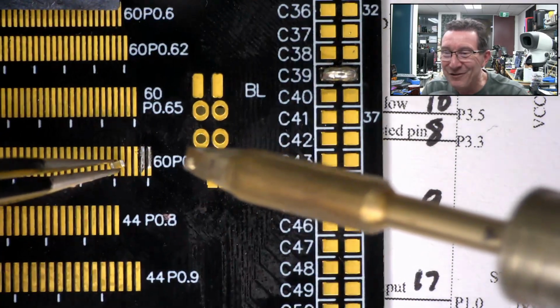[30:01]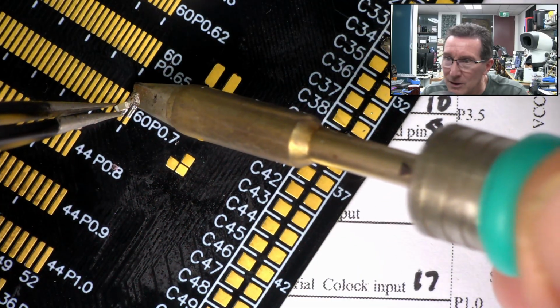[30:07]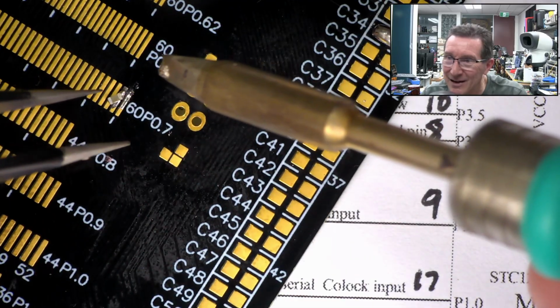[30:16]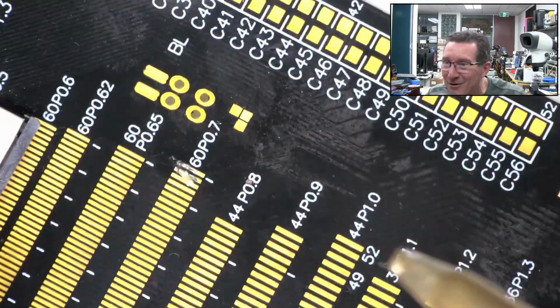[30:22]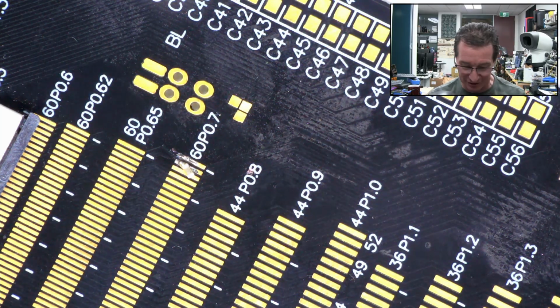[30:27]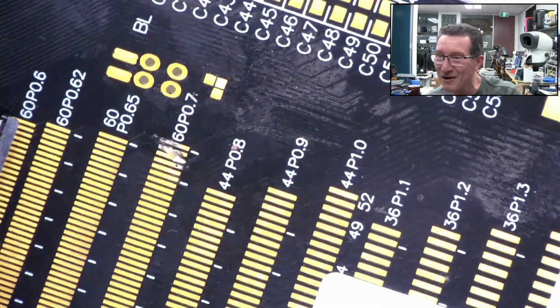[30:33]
I've got to go between pins 2 and 3. It would have been good if it was 2 and 4 there. The other ones don't go to pin 60, unfortunately. Of course they don't. So I kind of have to be real careful there. Whoa, nah, it was touching pin 3, wasn't it? This is tricky. There you go. Oh, I think I might. Oh, is it shorted down there? I don't think so. I might get away with this. I could go for an 0402, but I just had an 0603. I don't know where my 0402 is. I had this one to hand. I'll use my LCR meter and see if I've actually got that.
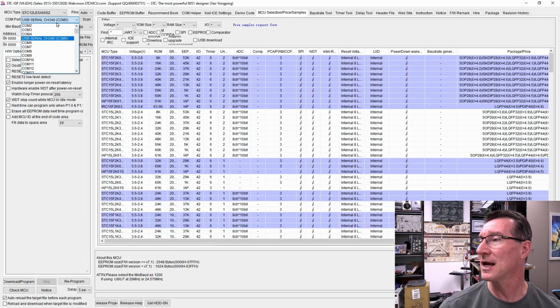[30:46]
Right, well, I've got it hooked up and I've installed the software. It just installed. No problems whatsoever. The driver, I had it already installed. It was a CH340. You can see there, set up as COM5. No worries. And then this software, the amount of support, like if I expand these, they just go on and on and on.
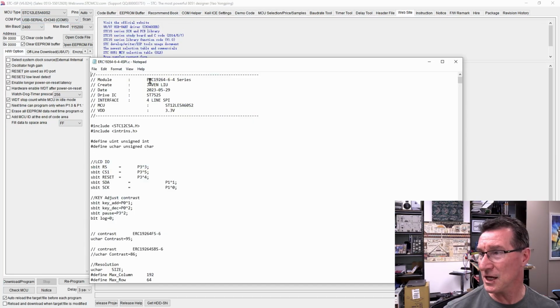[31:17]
Like if I just go to this one down here, for example, it just supports all these different versions. It's just insane, all these variants of this part. Anyway, this is the one we've got, the STC12LE5A60S2. I think I've got that right. So I've got the C file here. I got the source code for it.
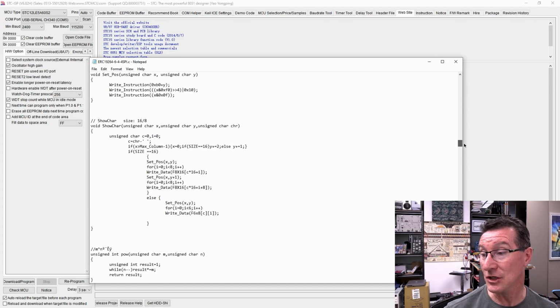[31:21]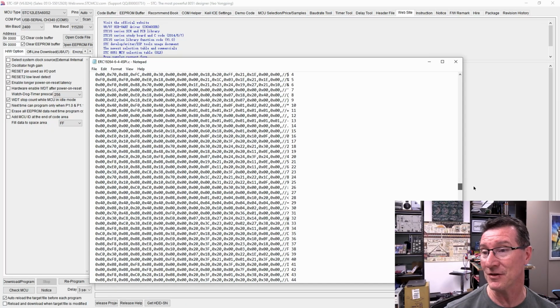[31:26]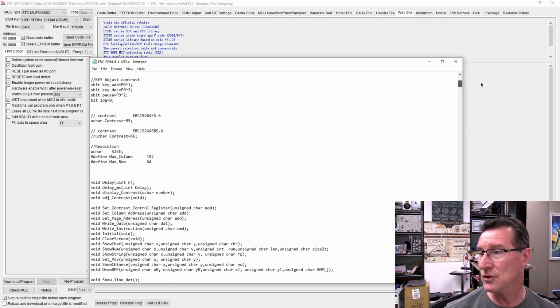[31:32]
And it looks like they actually include the fonts in here. So they're not reading the font chip, but this one doesn't specifically have a font chip. So there you go. That's an 8x16 font, etc. So that's all built in, which is fine and dandy. But do I have to go find myself an 8051 compiler that supports this? Doesn't make sense. This is just the programmer software. But I can't find the hex file. So without that, I'm up the creek without a paddle.
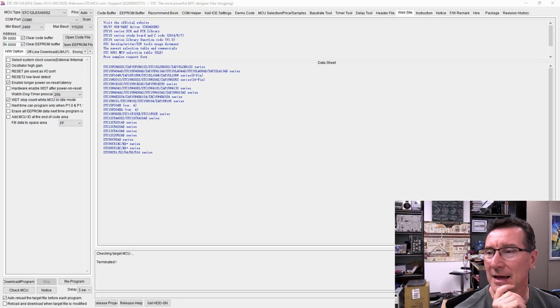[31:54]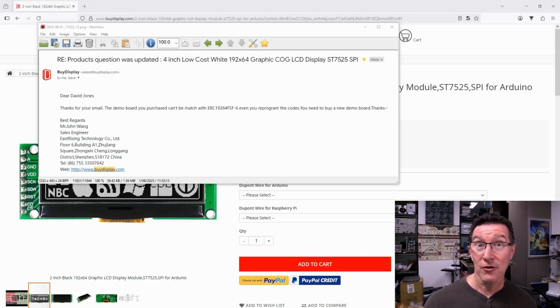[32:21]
So at this stage, I have no real desire to go and try and find an 8051 compiler that supports this chip. Sure, you can compile it, but then have you got the right fuses and everything else, whatever that micro needs? It would have been great if they just supplied the hex file, and I could just burn it in, but it doesn't seem to be on their website, so I'm going to have to contact them.
Well, it turns out their service is very good. They replied to my email in like 15 minutes or something. Unfortunately, it looks like they don't supply the hex files. "Thanks for your email. The demo board you purchased can't be matched with the ERC, the -6 version." I've got the -1 version, which is what we used before. "Even if you reprogram the code, you need to buy a new demo board." I don't think that's correct.
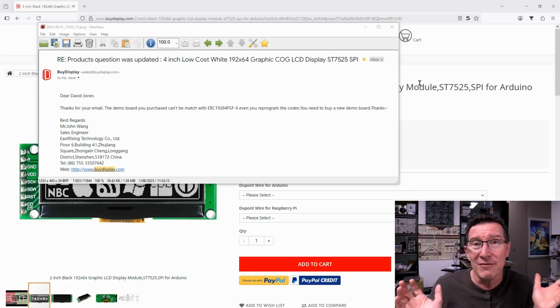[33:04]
I was asking about the hex files, but they're basically saying, no, we're not going to give you the hex files. That's basically what it means, which is ridiculous because they give you the actual source code. You can download the actual source code for each individual demo board that's matched with each individual LCD. The full C source code. So why not just give everyone the hex file?
I don't know. I guess they don't want the support requests from idiots like me trying to reprogram the demo board, because it's complicated to do, as you saw with that matrix and everything, and figure it all out. So I can kind of understand why they don't want to give you the hex file. But they give you the source code as an example of how to actually drive the LCD. But yeah, they don't want you dicking around with that hardware board because it's too hard.
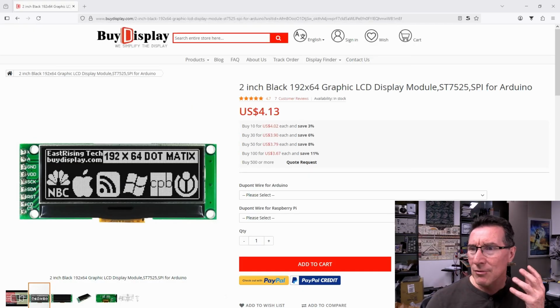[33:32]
So anyway, I was looking around for other examples for the ST7525. Thought I might be able to find some Arduino code or something like that. Couldn't really find anything. There was some code on Adafruit that worked with a 7565 or something. It's like a smaller graphics thing. I'm not sure if it's compatible enough that it would have worked. But anyway, back to buydisplay.com.
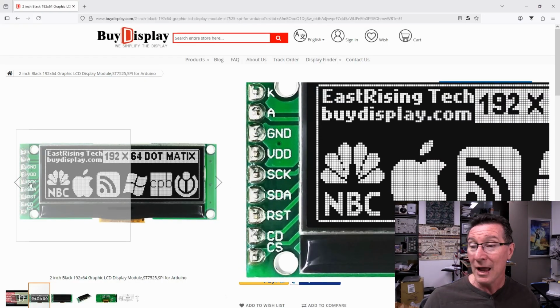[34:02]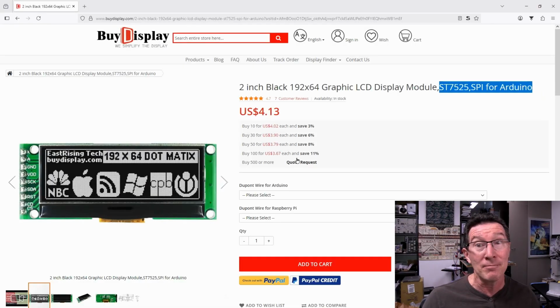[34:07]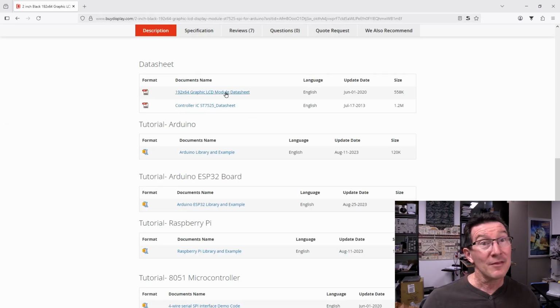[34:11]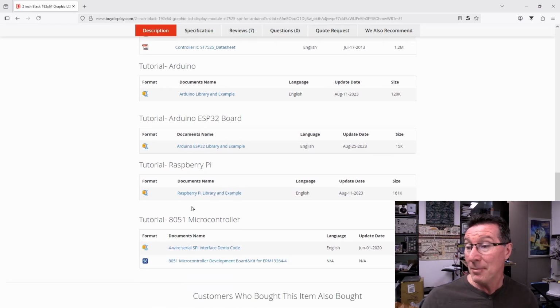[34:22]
I found that they actually have this exact one, which is SPI for Arduino. Here you can buy the module, and it comes with a board that just has a nice little SPI bus on it to hook up to the Arduino. And if you go down here, they have all the stuff. They have the data sheets, the controller data sheet. They've got an Arduino library, an example, but then you've got to level convert because the Arduino is 5 volts. It expects 3.3. But down here, they've got a Raspberry Pi library and example. I've got a spare Raspberry Pi. Let's give that a whirl.
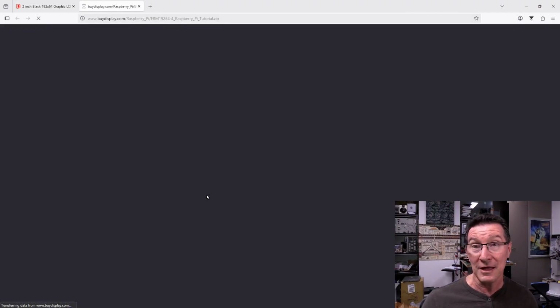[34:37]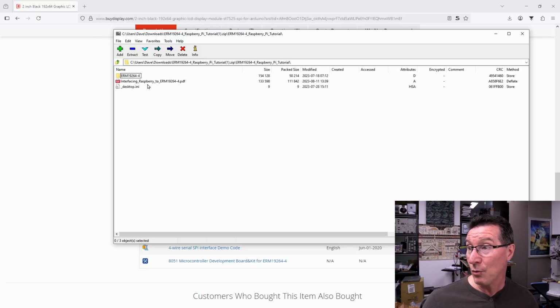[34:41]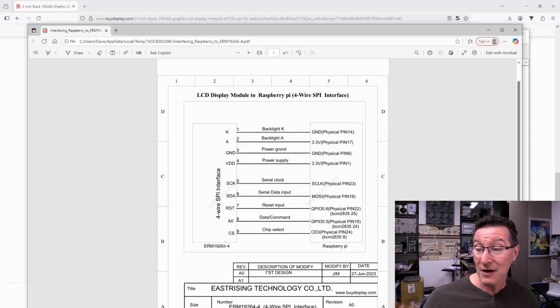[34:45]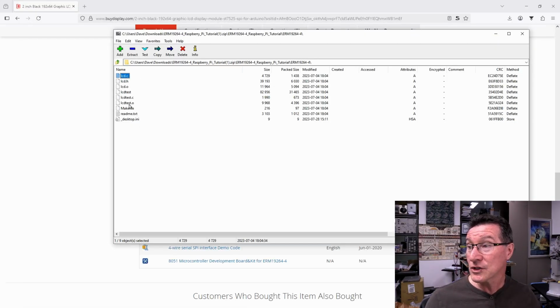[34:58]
But as it turns out, the Arduino library and example doesn't actually have as much info as the Raspberry Pi one does here. What you actually get inside the Raspberry Pi one is an interfacing document, and that tells you how to interface the -4 one. Mine's the -6, but it's the same chipset and the same resolution, so it should work, and it tells you how to hook it up to the Raspberry Pi here. Beautiful. And if we go in here, we've got all the source code for this. They've got a make file for it.
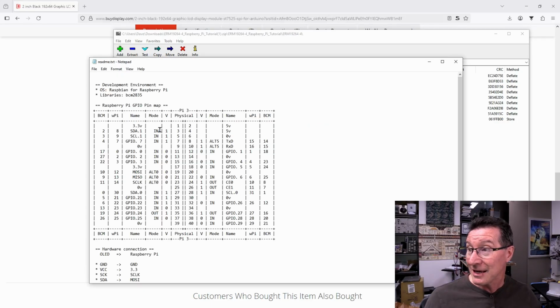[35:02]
They've got a README text, which then lists the development OS, Raspbian for Raspberry Pi, and BCM2835 is the library that it uses. They've got the table of how to hook it up to the physical Raspberry Pi 3 here. Look at this. This is great.
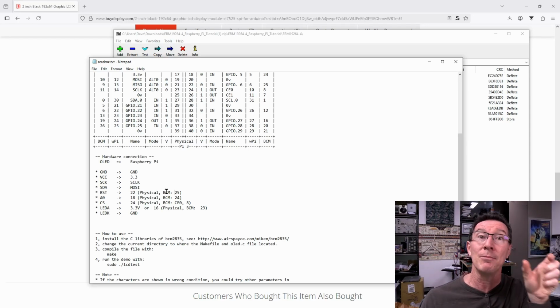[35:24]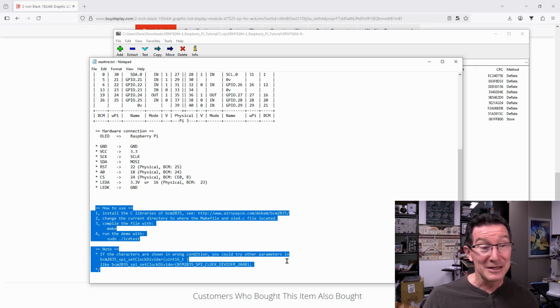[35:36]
And there's a difference between the BCM, like the library, the actual chipset used, the pinout on the chipset and the pinout on the Raspberry Pi. So they tell you it's physical pin 22, whereas in the actual chip itself is pin 25. But yeah, this is great. And then they give you instructions on how to run this LCD demo test. So let's give it a whirl.
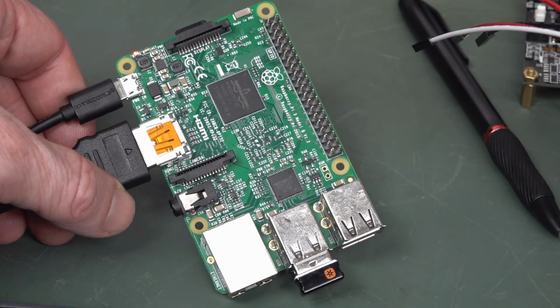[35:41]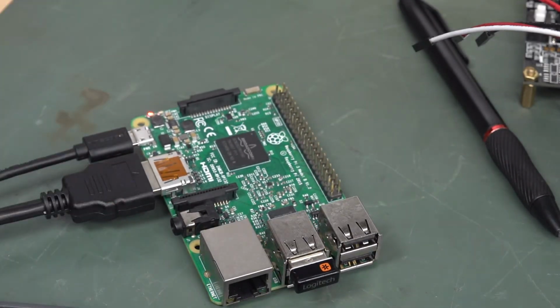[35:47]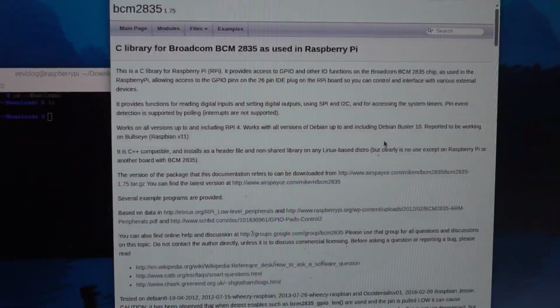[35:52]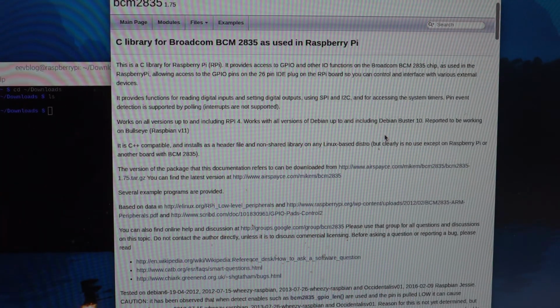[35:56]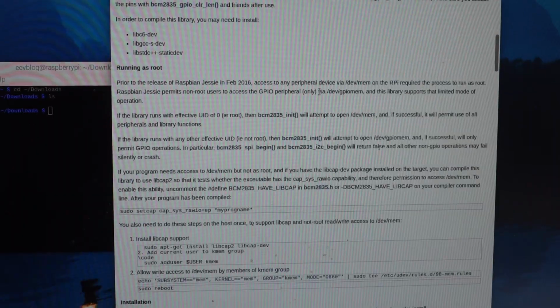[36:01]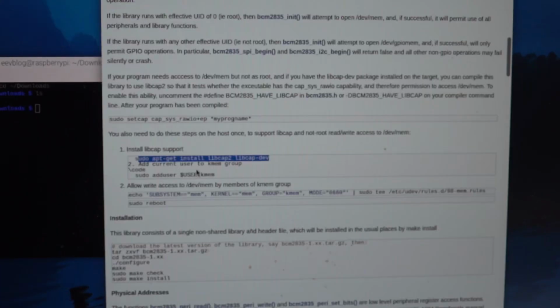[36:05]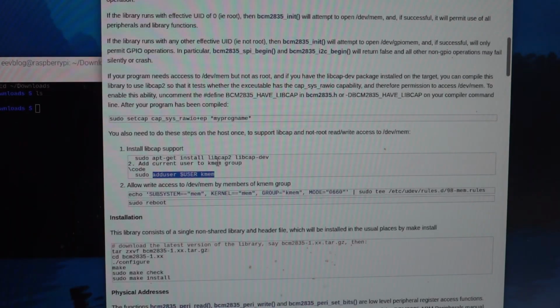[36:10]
Right, so I've got an old Raspberry Pi 3 Model B v1.2, and I've downloaded the latest Raspbian OS onto it, and I've got to install this BCM2835 C library from Mike M, whoever Mike M is. Thank you very much, Mike M. So I've done this. I've installed libcap, and then I've added the user, which is EEVblog, to kmem, whatever that is, and then I've done these things here.
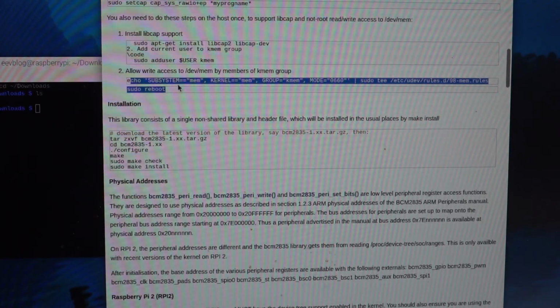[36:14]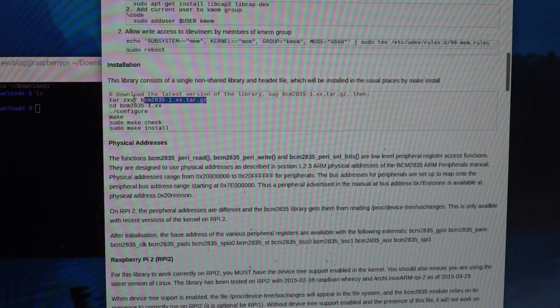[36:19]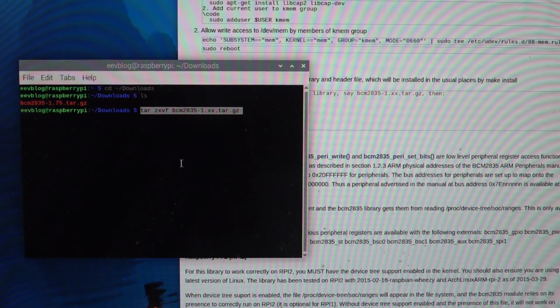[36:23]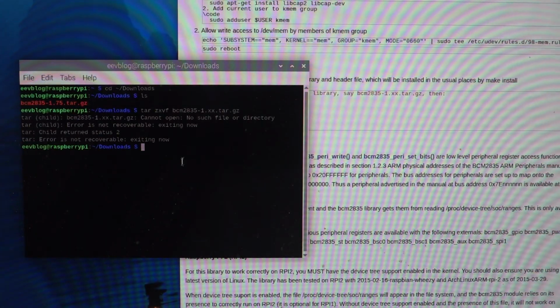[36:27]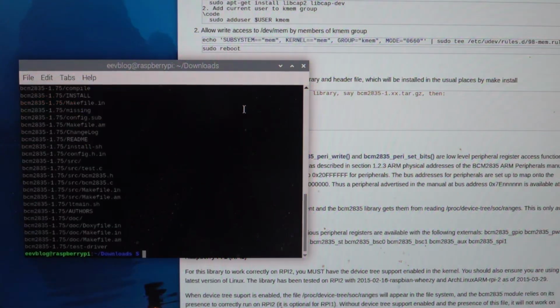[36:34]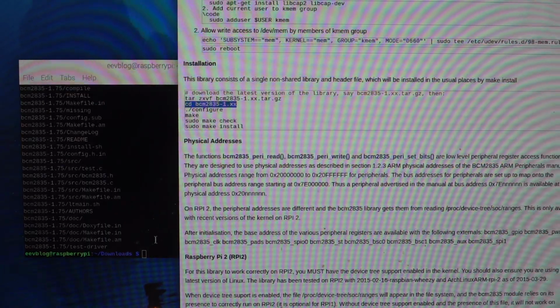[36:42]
This thing is slow as a wet week, by the way. Terrible. Anyway, I've downloaded the compressed library for this thing. So now this should work, I think. Oh. No, cannot open, no such file or directory. Oh, I've got to put in the number 1.75. Okay. Yep. Oops. 75. Let's try that. There you go. So that's done that. It's in the download directory. Whatever. Geez, this is not easy, is it?
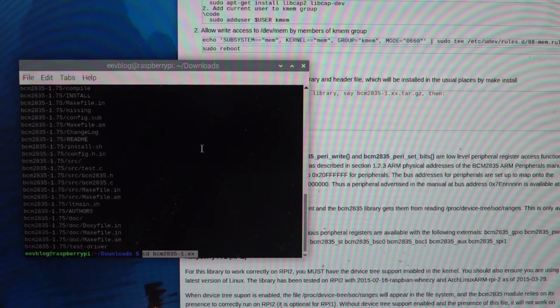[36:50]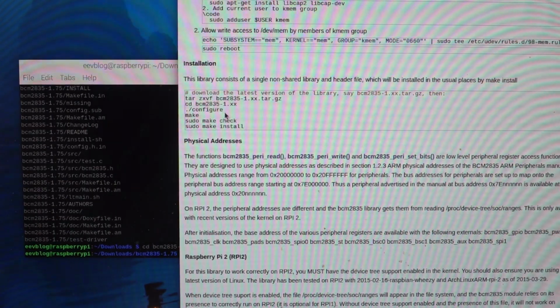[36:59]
Is it like this for all, just toggling a few I/O pins on a Raspberry Pi, or is it just because the LCD company's programmer has decided to use this particular library or whatever? Is that the deal? I don't know. I don't do coding on a Raspberry Pi.
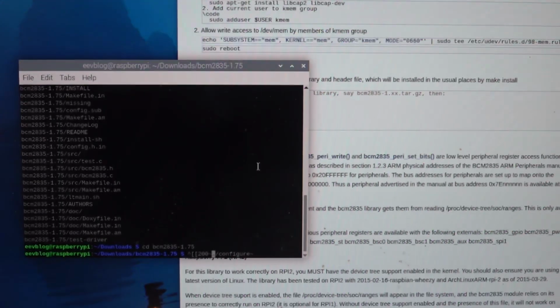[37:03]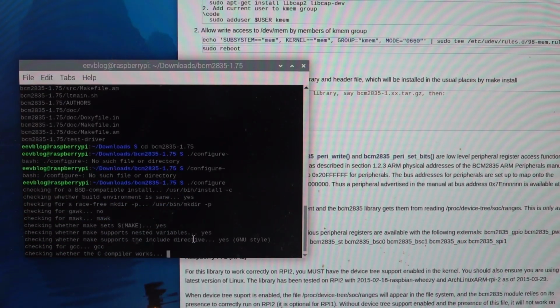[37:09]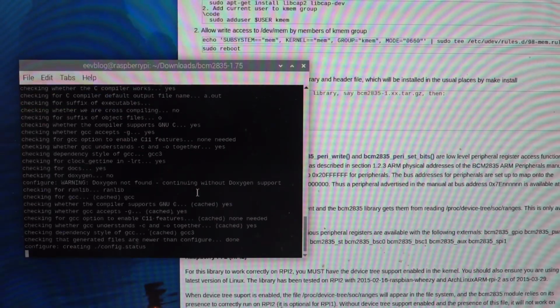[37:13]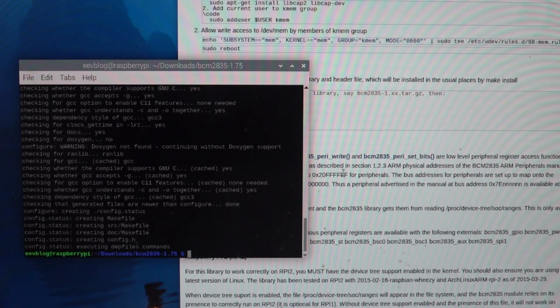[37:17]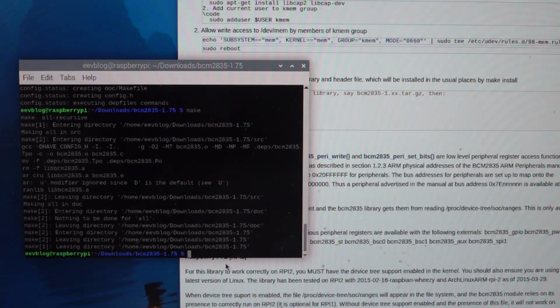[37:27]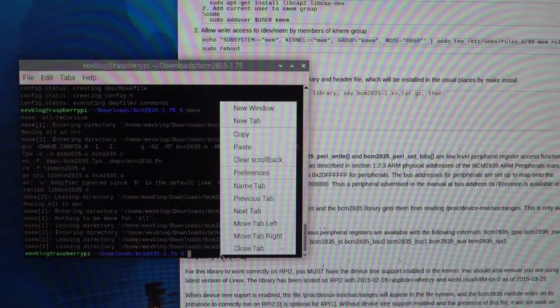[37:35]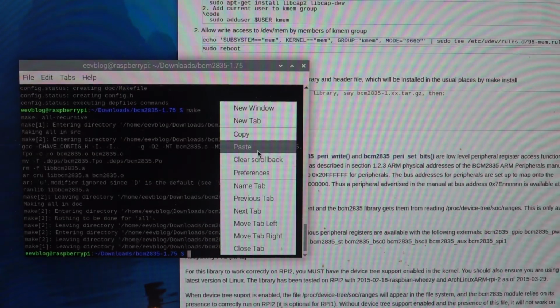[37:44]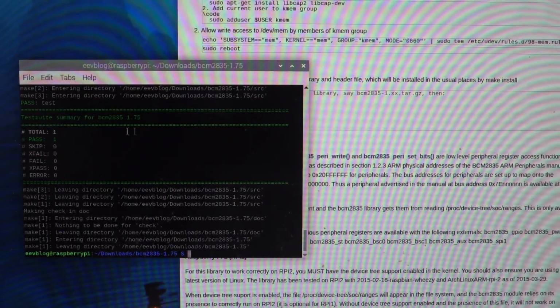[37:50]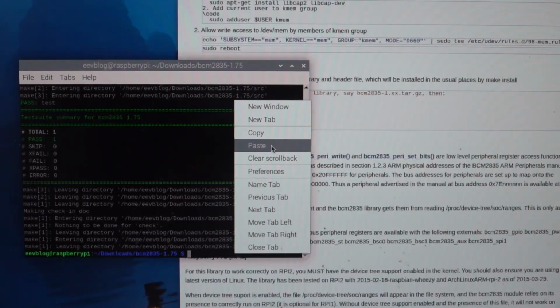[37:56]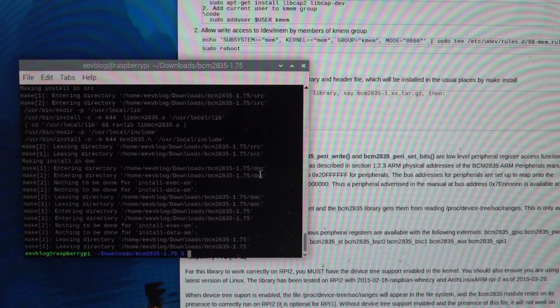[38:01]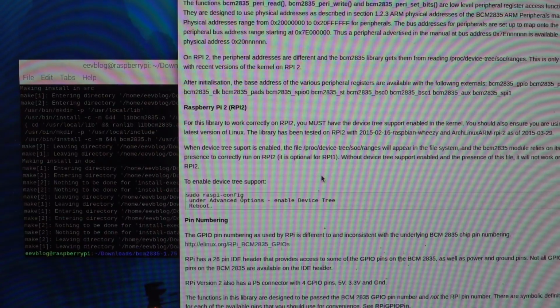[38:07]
See, how would you figure out to do all this without instructions like this? It's just crazy. And this is just so that I can compile the code and then run and toggle a few I/O pins. But hey, it's better than buying a new demo board, I guess. Sudo make check. There we go. Oh, yep, pass one. Yep, that sounds good. Sudo make install. This is crazy. I understand what it's doing, but there's no way I would have figured this out on my own. Absolutely no chance whatsoever.
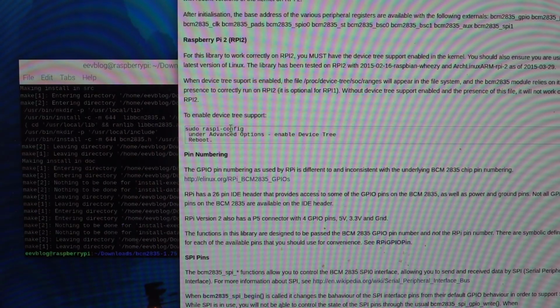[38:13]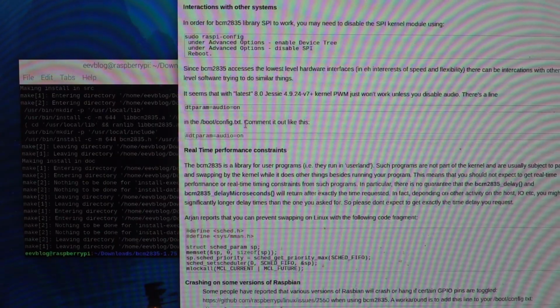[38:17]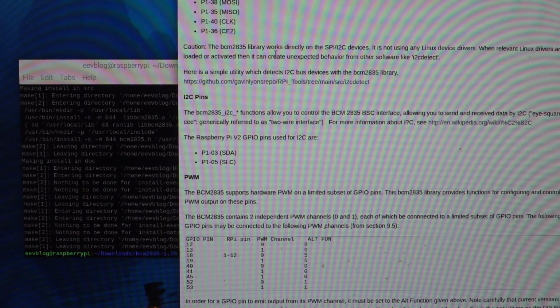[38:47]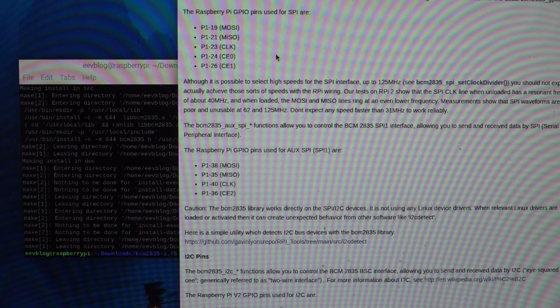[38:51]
Yeah, okay, so it just mentions Raspberry Pi 2 to enable device tree support. Do I know that's only for Raspberry Pi 2? Real-time performance constraints? No. Interactions with other systems? In order for your library SPI to work, you may need to disable the SPI kernel module using this. Oh, well, I may have to do it. I don't know if the software's going to bit bang the pins, or whether it's going to use the hardware SPI or what. I'm not going to touch that now. I won't touch that unless it doesn't work, unless I compile the code, run it, and then I can't see any data toggling on the pins. Then I'll know something's wrong.
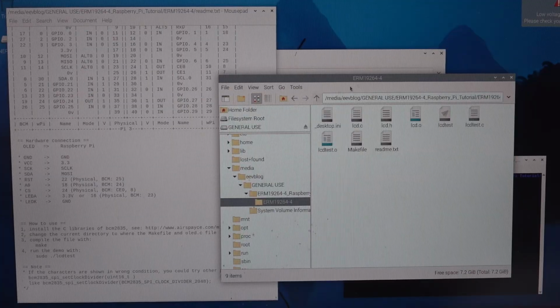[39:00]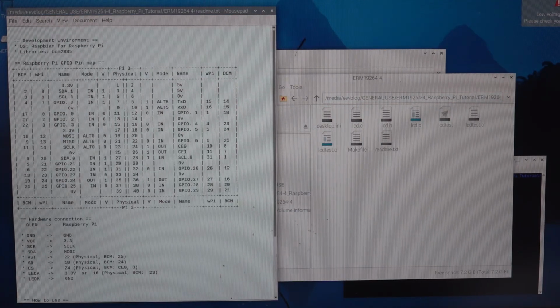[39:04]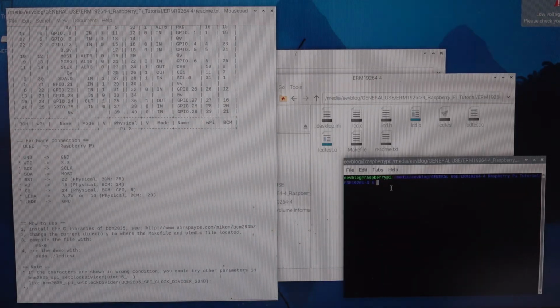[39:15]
All right, I got the Raspberry Pi code here downloaded. I've got the text file, which tells me how to physically connect it. There it is there. And I've got to make it. So I've opened the thing here, and I've just got to do make, because it should have the make configuration file. So make LCD test is up to date. Done.
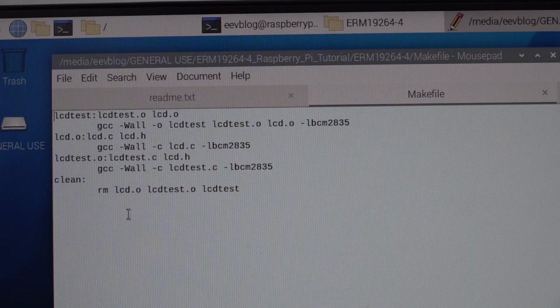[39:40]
sudo ./lcdtest. I'm doing this all on the USB stick. It shouldn't matter. No, command not found. No, it didn't make it, did it? So there's the make file. So it should call GCC, don't know what Wall is, and it should compile the code using the BCM2835 library, which we installed previously, and it should generate the LCD test executable, but it's not.
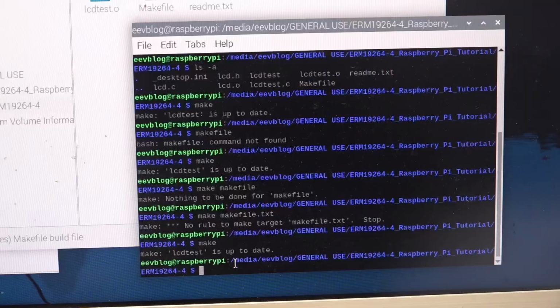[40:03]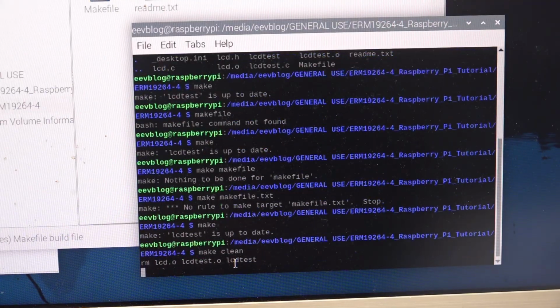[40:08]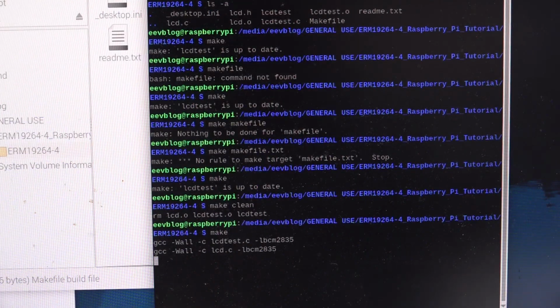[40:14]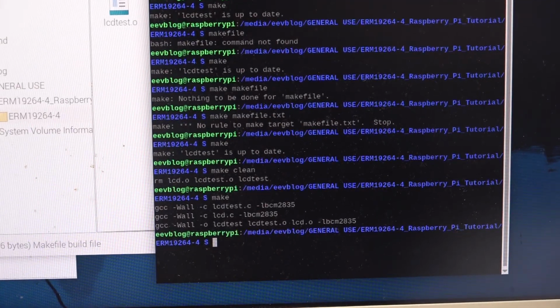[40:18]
So, okay, apparently I can go make clean. If I make that again, okay, I've cleaned it. There we go. Right, I just had to clean it first. There you go, trap for young players. GCC Wall, blah, blah, blah. It did it. Okay. I expected some sort of output from it, but I guess it's done.
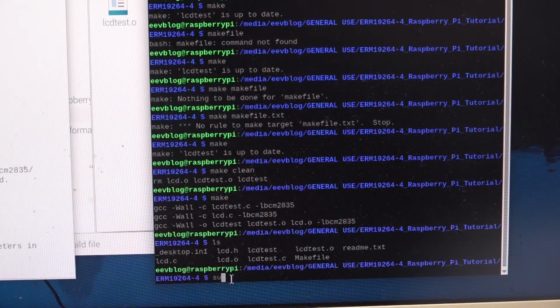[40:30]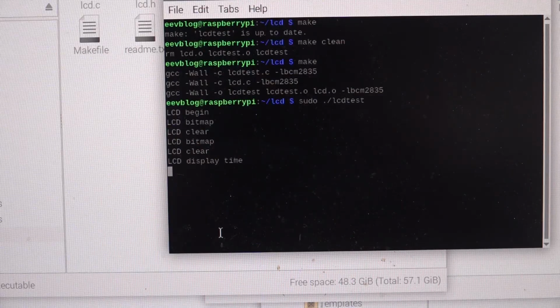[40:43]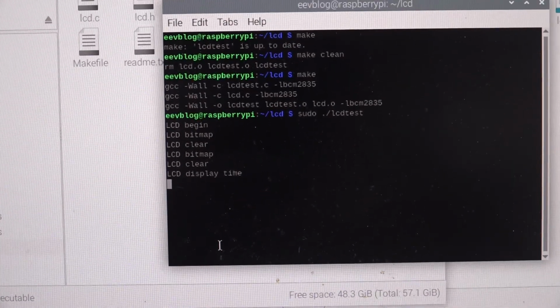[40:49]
So now I can run it. Haven't actually connected up the LCD yet, but I can do that once I get through this. sudo ./lcdtest. No. Woo! I got it running! There you go. It didn't like the USB stick for some reason. I'm not sure why. Yeah, everyone's screaming in the comments, whatever. But yes, it is now running.
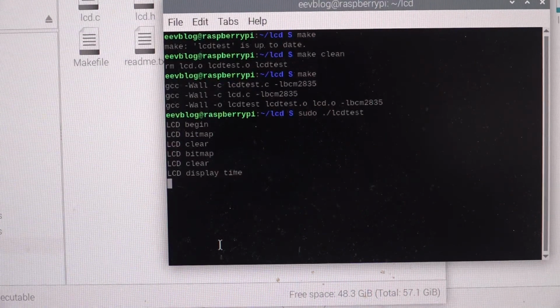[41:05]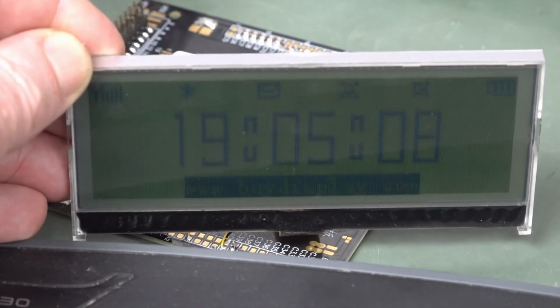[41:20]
So therefore, there we go. It's doing LCD begin, LCD bitmap clear, display time. I don't know what the program does, but yeah, there you go. It's something. So I'll hook up the screen now and hopefully it should work. Those pins should be toggling. If I hook them up the right way and cross your fingers, tongue at the right angle, you should get something on the screen. Winner, winner, chicken dinner.
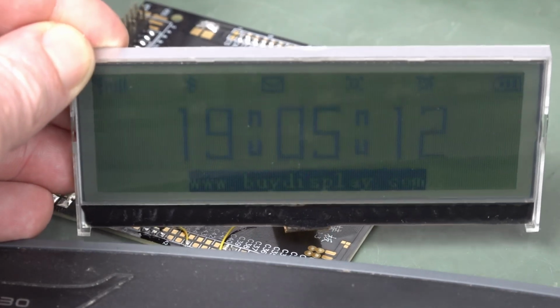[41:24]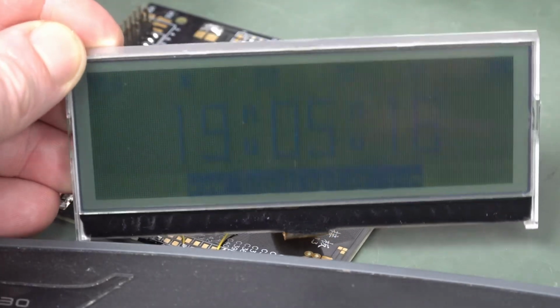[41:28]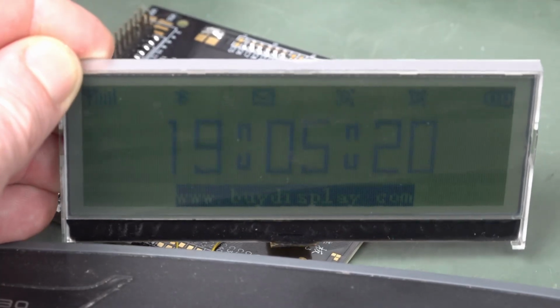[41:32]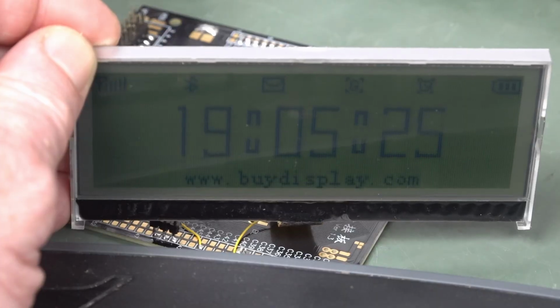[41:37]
You can probably barely see that, but there is a clock. There is a clock that is working. So we have a contrast issue, but we can fix that. So there you go. All that rigmarole I had to go through just to run this thing.
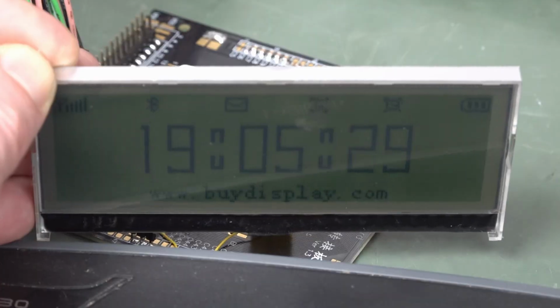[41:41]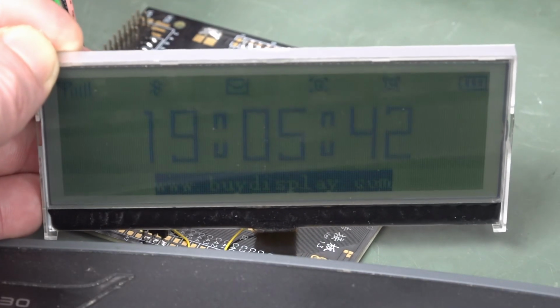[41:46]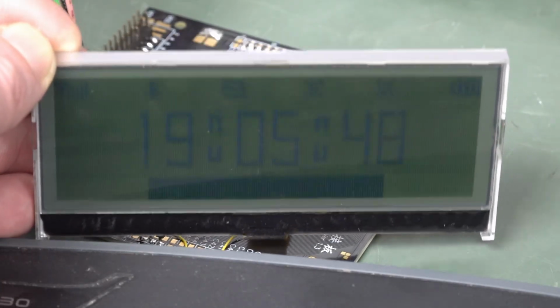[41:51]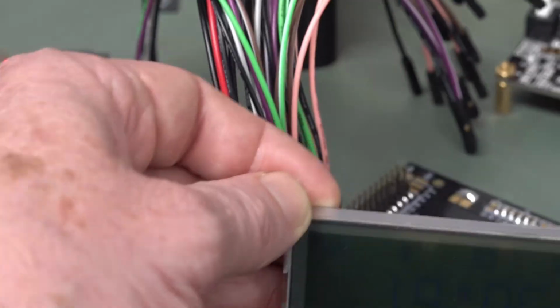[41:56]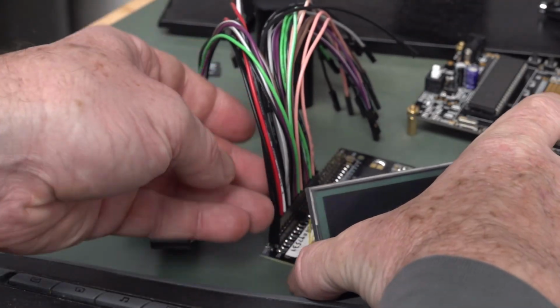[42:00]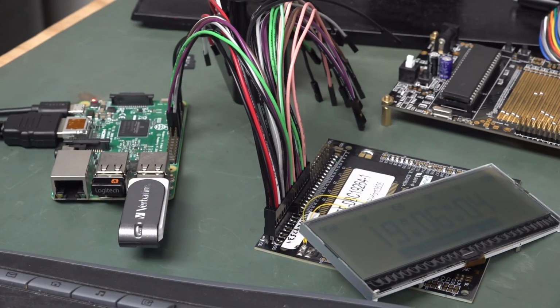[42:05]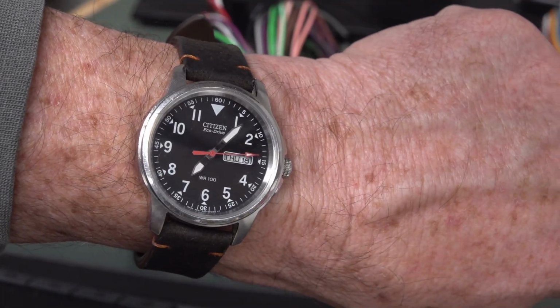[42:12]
I don't know if that's normal. I've never written a program for a Raspberry Pi before, but we installed Mike's library or whatever it was, and then we did some sudo magic, and we built it with GCC, and it actually worked. So, yeah, that's amazing. And I didn't goof up the wiring over here either. So, yeah, my soldering worked, and everything worked first go. I did not expect that to work first go. I thought Murphy would absolutely bite me on the ass there, but no, Murphy's sleeping and it's 7 p.m., damn it. I'm going home for dinner.
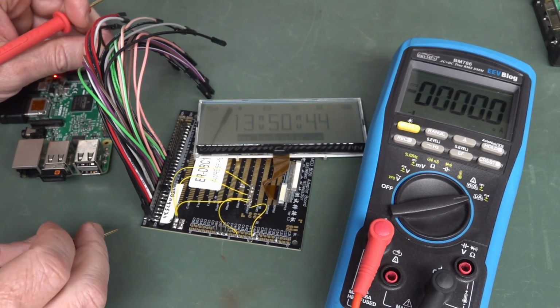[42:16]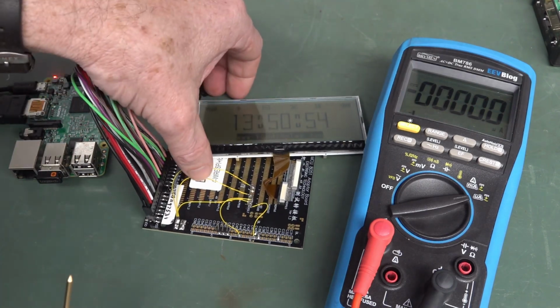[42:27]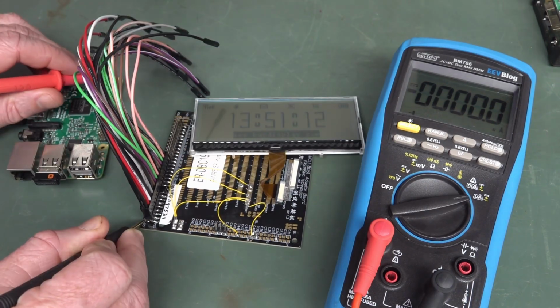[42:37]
Alright, so let's measure the current consumption. Oh, there you go. I disconnected the power pin and the contrast has changed because it's being powered by effectively a different voltage, a lower voltage, because it's going through the pins. It's going through the I/O. Whoa, there we go. It's jumping all over the place. Anyway, let's power that. And, oh, 600 microamps. Well, so much for that.
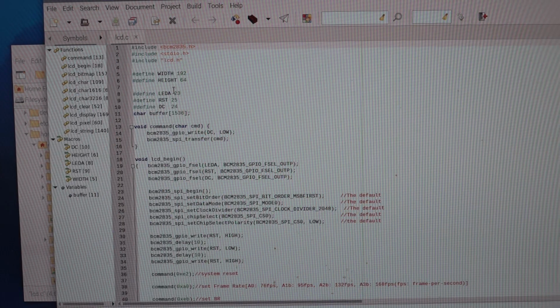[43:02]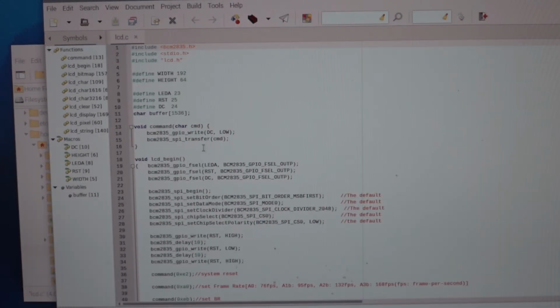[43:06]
It's supposed to be 180 microamps. I know the contrast isn't set properly. That's a software setting, so a lot of the pixels are partially on. But damn, it's supposed to be like 180 microamps. So now I've got to figure out where they're setting the contrast in here.
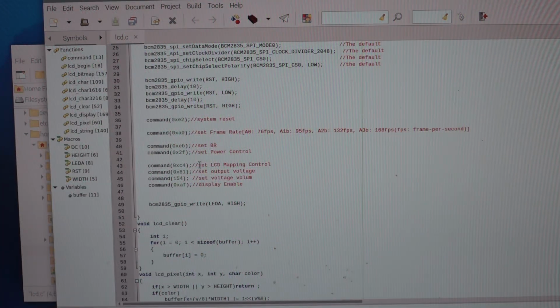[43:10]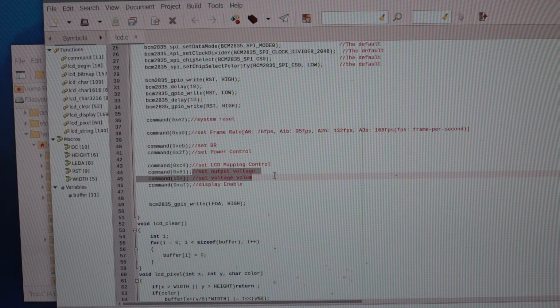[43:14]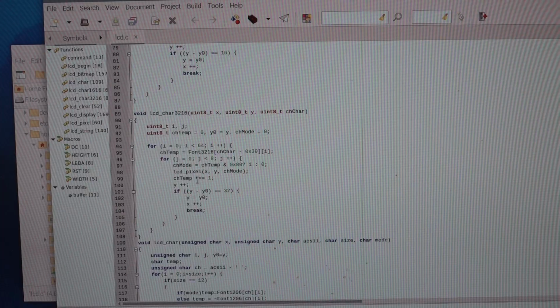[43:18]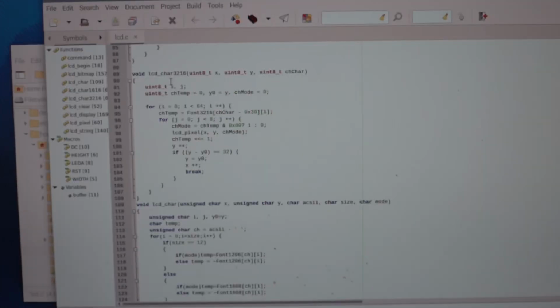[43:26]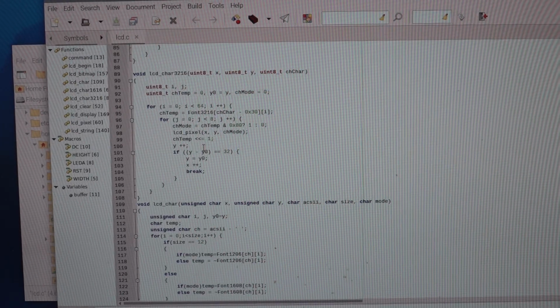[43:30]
Well, it's got set LCD mapping control, set output voltage. Is that it? Char 16 by 16, 32 by 16. Is that the big clock display? Yeah, yes, it would be, because that's half the height of the 64 LCD. So that's the font that they're using. So just to get me started in this timer project, I can just use that 32 by 16 font.
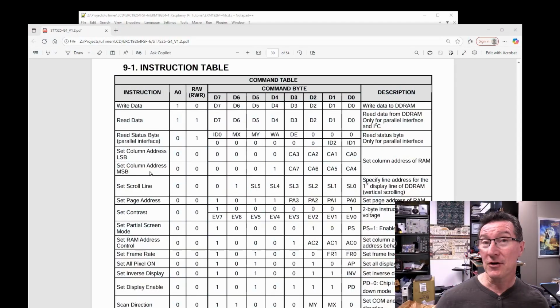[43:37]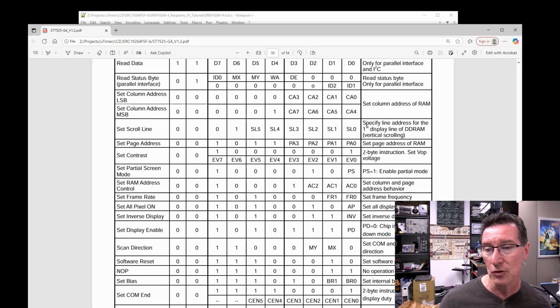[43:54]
No worries. So if we go to the chipset datasheet, very comprehensive, of course. Not all LCD datasheets will have this; this is not the datasheet for the LCD module itself. You've got to go into the chipset datasheet usually to get this sort of stuff. And here's the instruction table, and the instruction set contrast, boom, it's a 2-byte instruction, set VOP voltage. There you go. So you put 1000, which is an 8. In hex, because you'll be sending hex values, usually we'll see that in the code in a second. So that's 8, 1, and then it sends that 8-bit value through to set the VOP voltage.
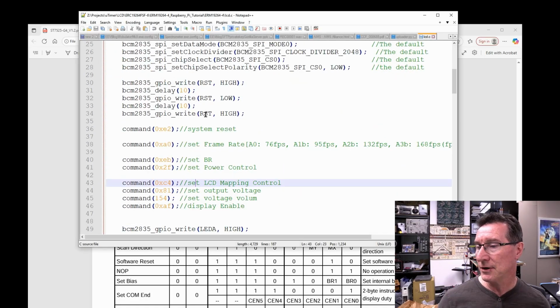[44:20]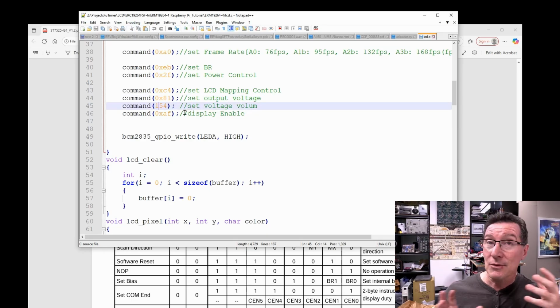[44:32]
So if we go into the source code here, we can see there it is, 0x81, set output voltage. It should have said contrast there, but you know, and then that's the value 154. So that's what that demo board would have been doing. Even with the other different chipset, it would have been setting a register value in there, and the buttons would have incremented or decremented that register value for the contrast. Old school LCDs have a trim pot in there and you can adjust the DC voltage, but modern ones like this, it's all software programmable, and Bob's your uncle.
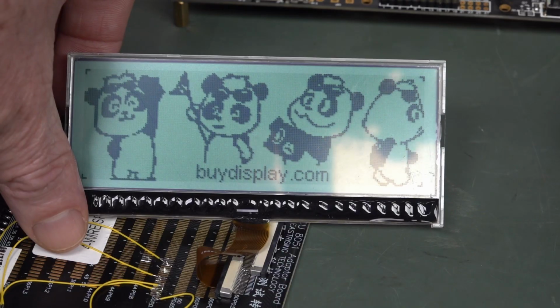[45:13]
So yeah, all I got to do is change that figure. I don't have any buttons hooked up to it, so I'll just experiment with that, recompile it, takes seconds, and then run it again. It's no problem whatsoever. So I'll just fiddle with that value and see if I can get optimal contrast. And there we go. I set it to 100.
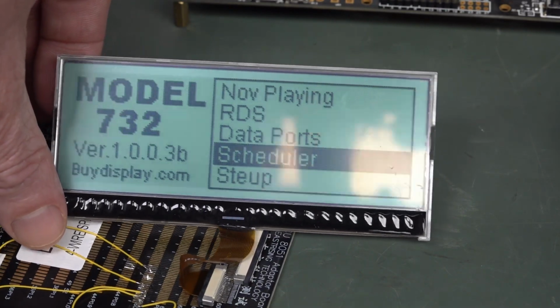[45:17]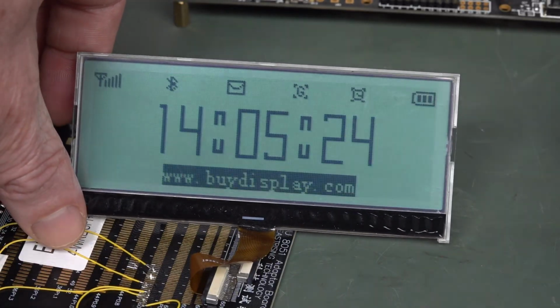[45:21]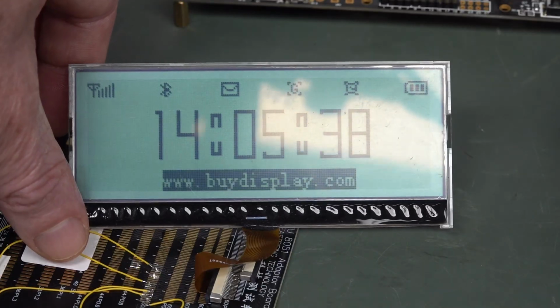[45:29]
I didn't know what the value was good, so I just changed it from 150 to 100, and that's not bad. That's not bad at all. That's reasonably close. So that's pretty good. Is that... oh, it's hard to tell. I can't really run the two side by side, unfortunately, because the cabling just doesn't allow me to do that.
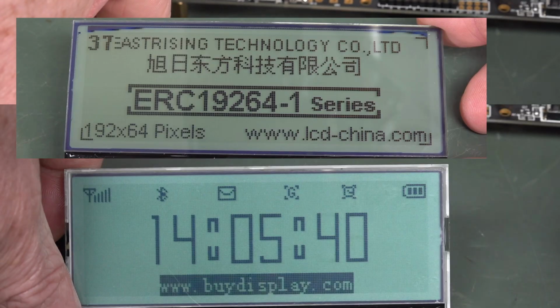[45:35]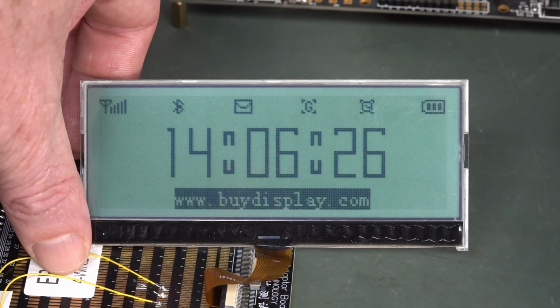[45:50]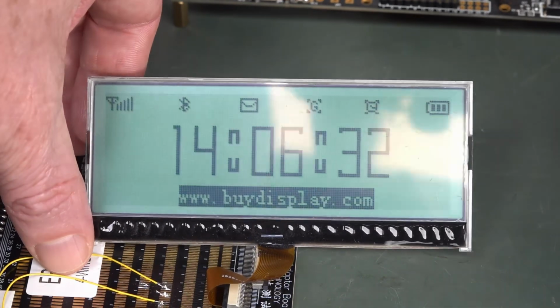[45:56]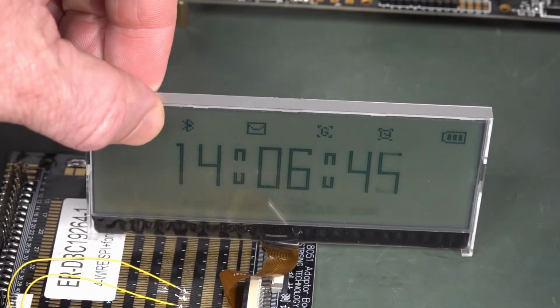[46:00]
This is straight on. I'll see if I can get a screenshot from the previous one and try and do a comparison there. It's hard without the same information on the screen, but that's not too bad. Remember, this is a lower cost LCD. It's about 40% less cost or something. But yeah, I'm not getting the power consumption. That is a problem.
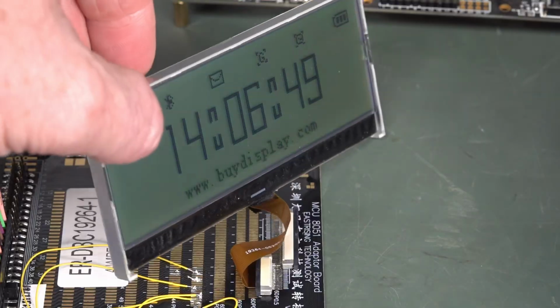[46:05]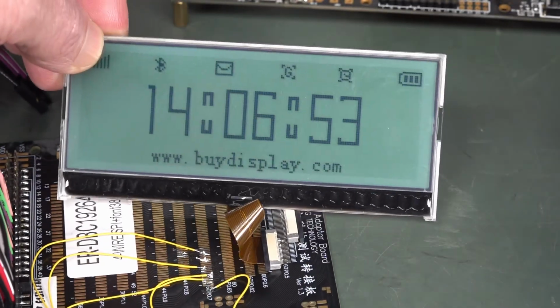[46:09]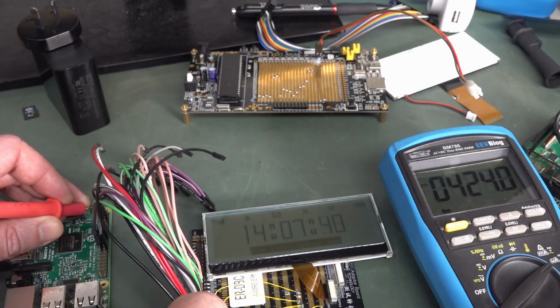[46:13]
But anyway, that still looks pretty good. Its angles are pretty great, so I've got no problems with that. Yeah, I think either one of those is a contender. I'll measure the consumption now. Yeah, 440. That's actually more, isn't it?
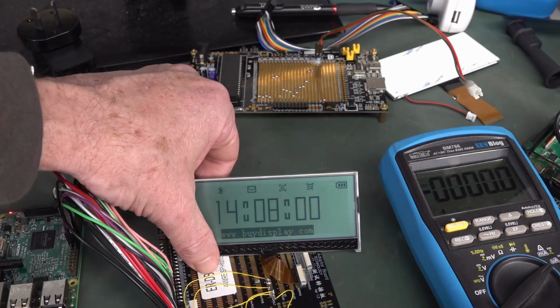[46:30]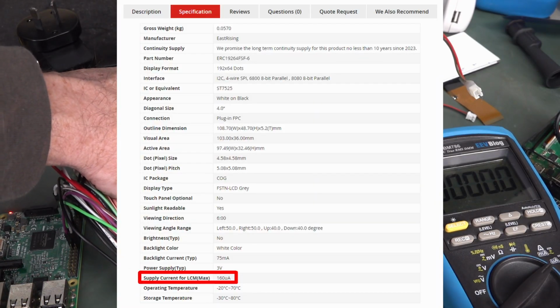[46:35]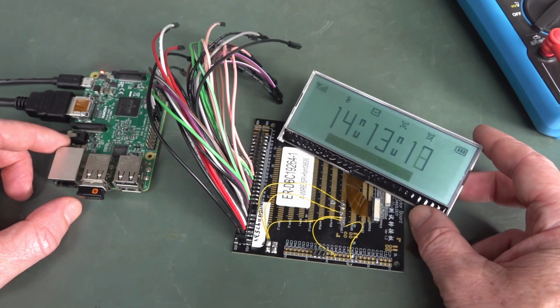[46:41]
I got both of these LCDs working, which I wanted to do for this part one. So I hope you enjoyed that. Much longer than expected, but I wanted to share with you the whole journey, and that's the point of these project design videos. I could just design it in the background and then suddenly go, oh, here's the finished product, and then do a 15-minute montage of designing and building.
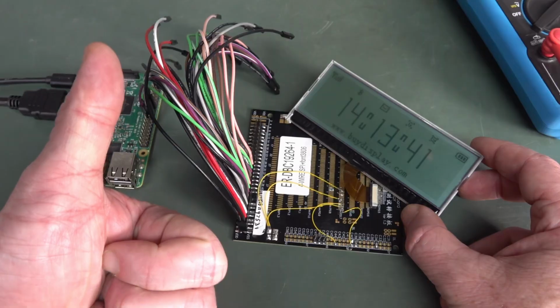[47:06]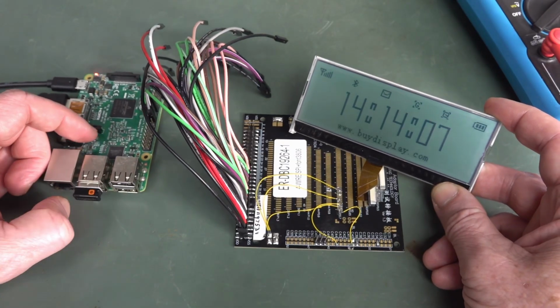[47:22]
But anyway, I want your thoughts and comments on the LCD selection like this. If you've got a better LCD in mind that's cheaper, better contrast, totally reflective.
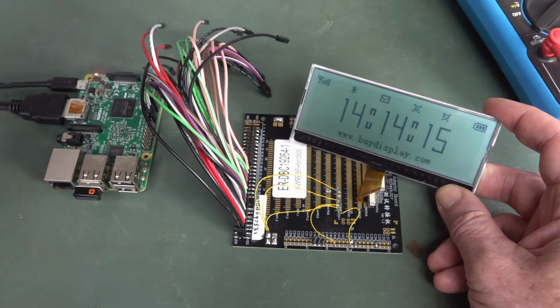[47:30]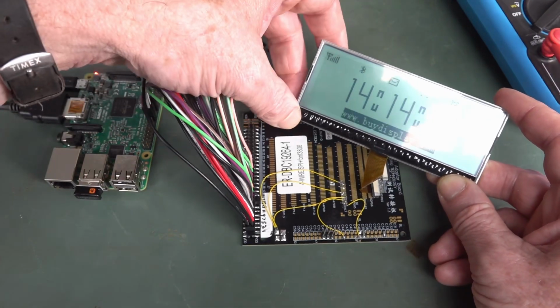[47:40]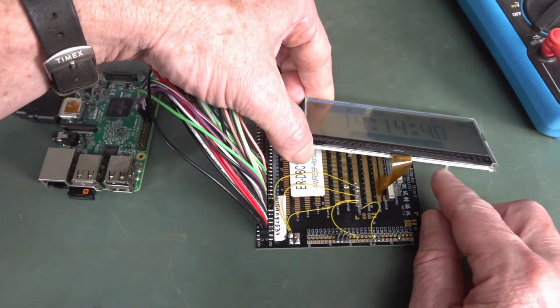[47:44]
Oh, I forgot, I did actually put the backlight of the other one on, and it's exactly as you expect, but it's like an 80 milliamp backlight. So I would prefer a 100% reflective LCD, which should give better contrast. But anyway, we've got these transflective displays. This one's got a backlight too, so I could just hook that up there and see what it's like. Oh yeah, all right, give me a second.
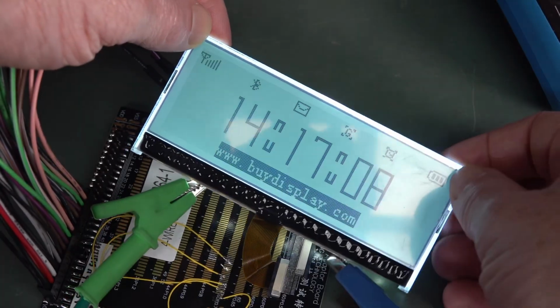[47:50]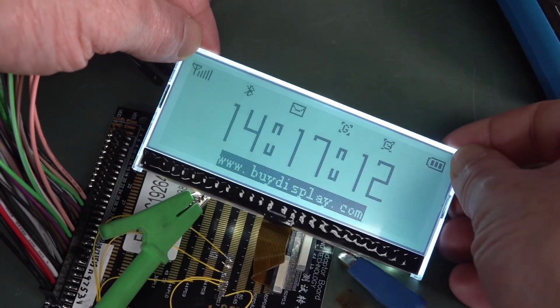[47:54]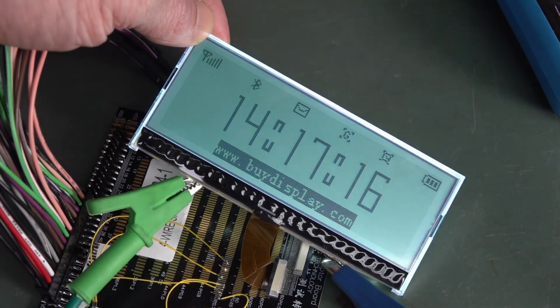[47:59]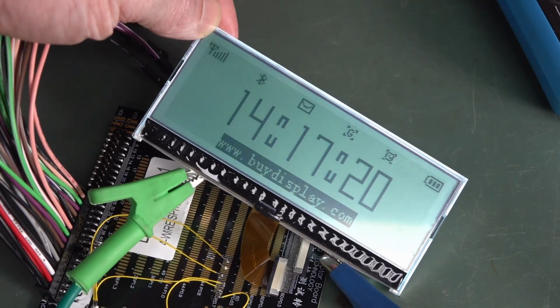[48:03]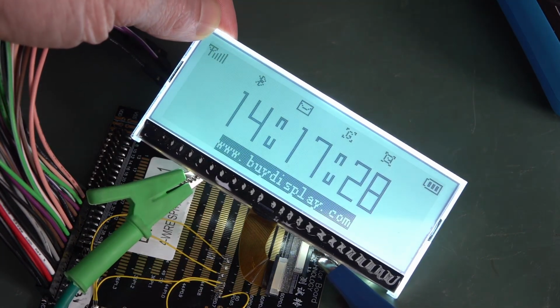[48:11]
And boom, there it is. That is a 50 milliamp backlight there. So yeah, 50 milliamps is going to chew a lot from the batteries. I can take it down to 10 milliamps. Even 10 milliamps is useful, I guess. That's the resolution of the power supply I'm using at the moment. I can only go 10, 20, 30, 40, 50, and right up to 100.
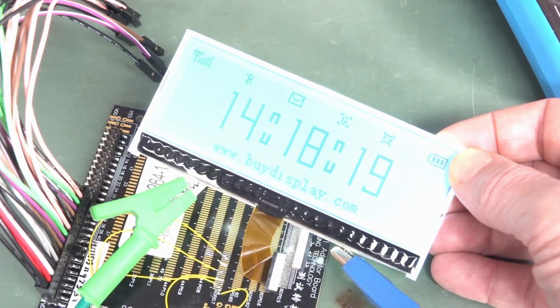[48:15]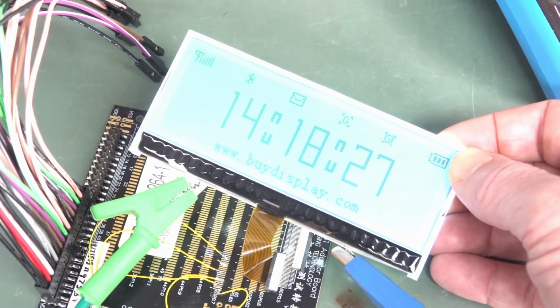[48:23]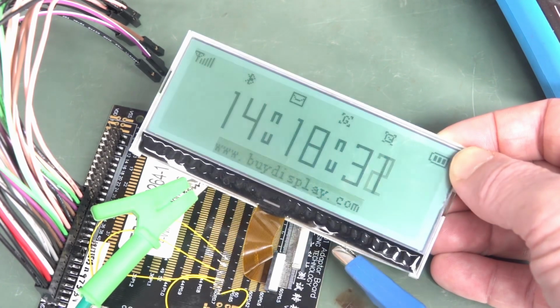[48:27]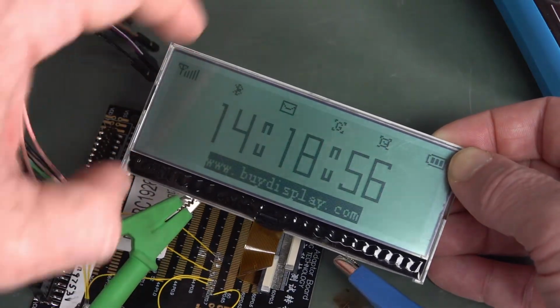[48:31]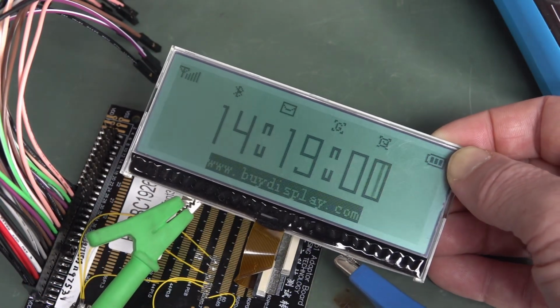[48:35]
And camera exposure is just going to play silly buggers. So if you are using this LCD, you might as well include backlight capability, but you wouldn't use it for normal operation. It certainly does not need the backlight. Turn off the exposure there, and you'd make the characters thicker, bolder, to make them look like higher contrast. They're like 2 pixels wide, I think, are they?
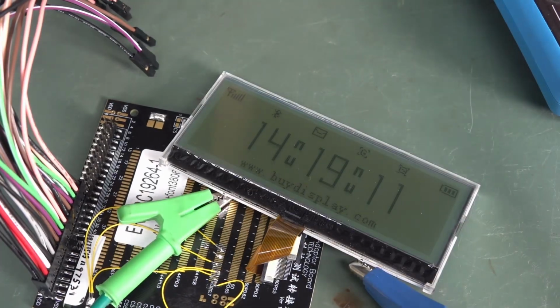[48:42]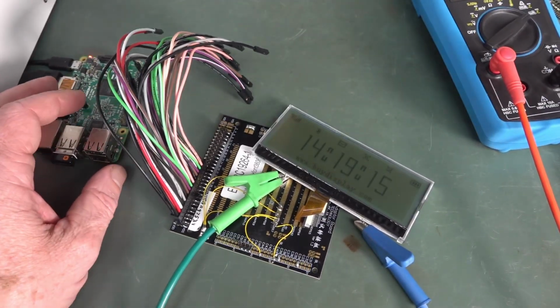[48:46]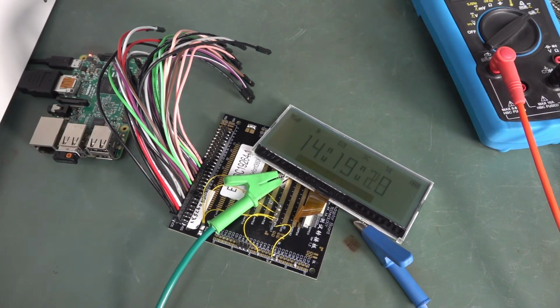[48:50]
Anyway, I think either of those LCDs would work, but once again, if you've got a better LCD, please leave the model number, because you can't include links on YouTube these days. I think it automatically hides them, but please leave the model number down below.
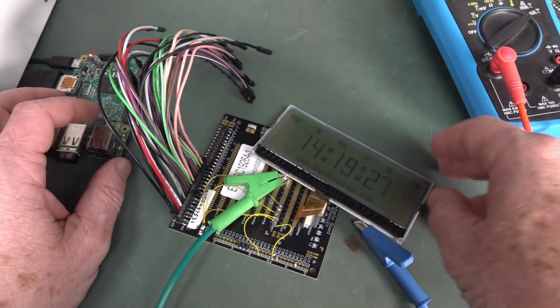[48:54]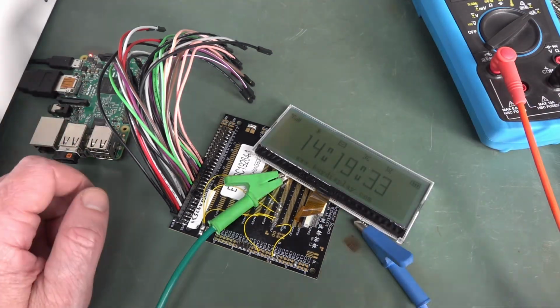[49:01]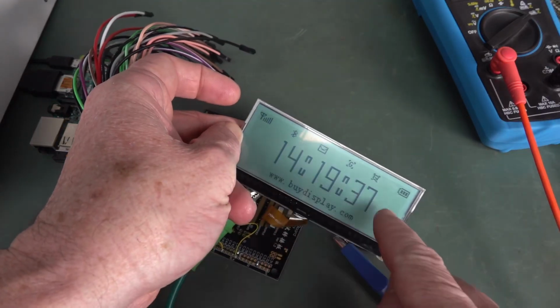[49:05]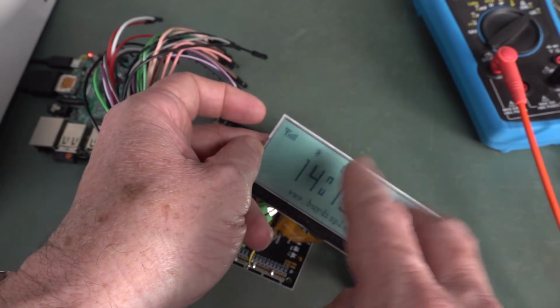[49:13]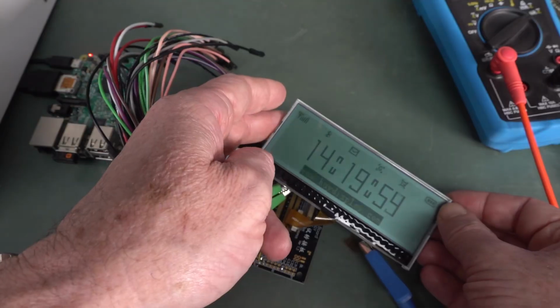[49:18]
It's got to be like 4 inches. Pure reflective would be nice, and I like 192 by 64. I think that gives a lot of ability to work with a large timer like this. It'd have at least tens of seconds, possibly hundreds of seconds, and then you can have multiple timers up there, and text list modes, and quite versatile things once you've got that dot matrix screen, of course.